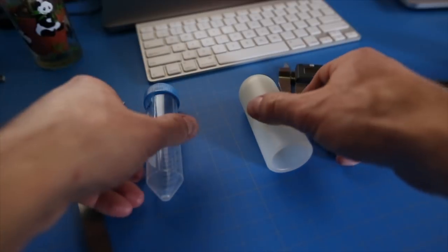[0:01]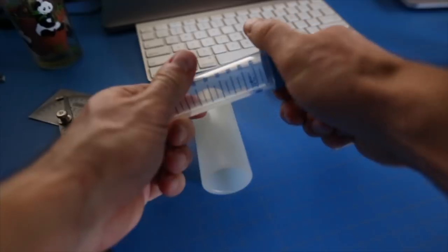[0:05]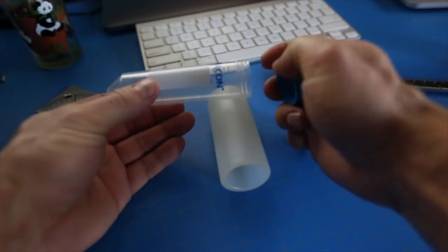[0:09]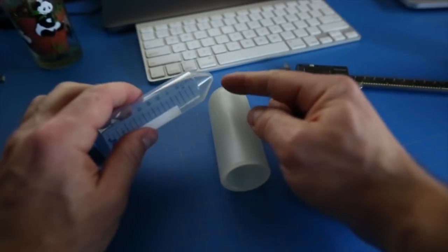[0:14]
Hey everyone, this project is quite a bit different than my normal projects, but incorporates 3D printing, which I'd like to do more of. Ultimately, the problem is that spacesuits are needed to protect astronauts from the intense radiation in space, and currently weigh too much to be useful for in-person Martian exploration.
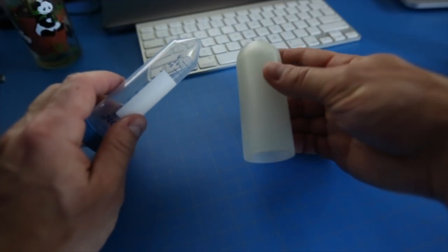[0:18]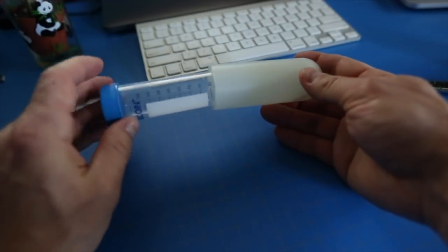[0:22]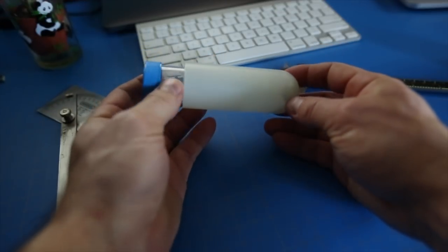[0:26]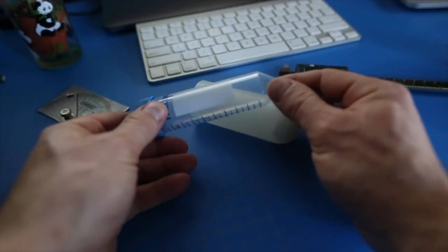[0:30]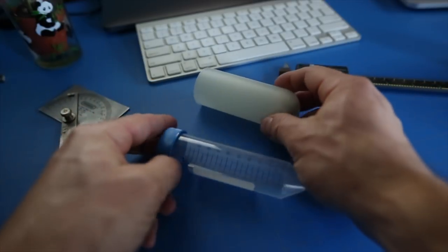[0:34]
I have a buddy that is working on a project to try to develop some new polymers that can do just as good of a job protecting, but at a much lighter weight. The issue he is having is that he needs to spin material held in these test tubes in a centrifuge, but the bottom of the test tube has a conical shape, whereas the centrifuge adapter has a spherical shape.
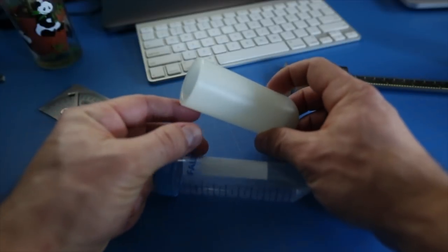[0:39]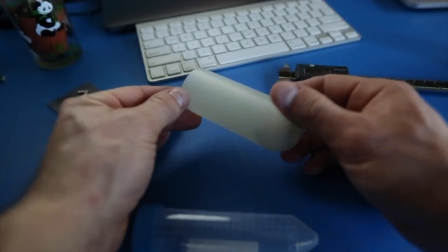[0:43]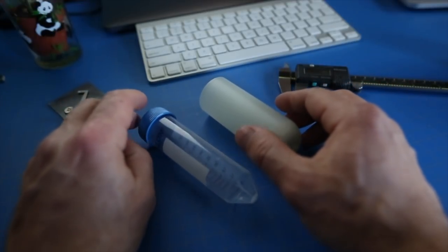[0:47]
The material is heavy enough and being spun fast enough that the test tube gets forced to take the shape of the bottom of the adapter and eventually breaks, making a mess and not doing anything to get us closer to Mars. Unfortunately, these adapters are expensive enough that the correct ones would use too much of the budget.
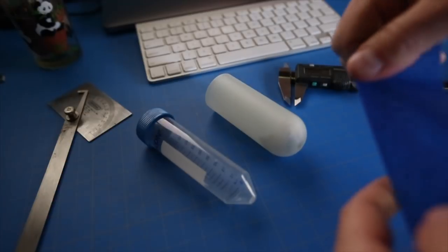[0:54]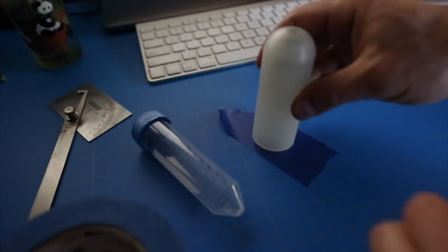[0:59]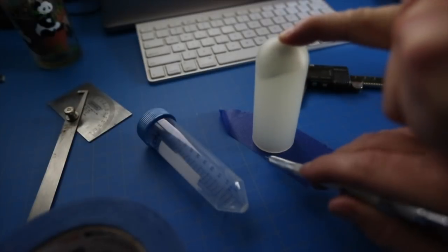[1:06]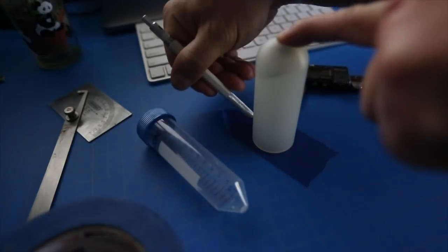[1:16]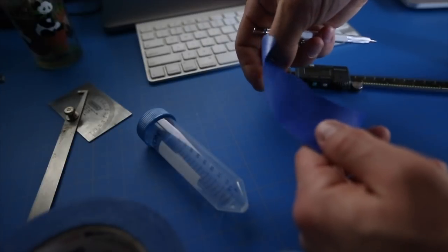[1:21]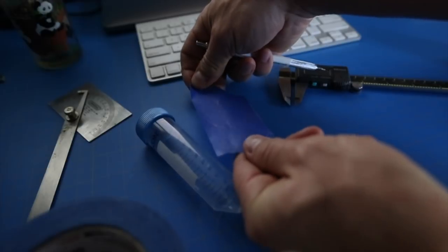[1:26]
Thankfully, for the sake of humanity's eventual salvation, I have a 3D printer and offered to make new adapters. Since he needs the original adapter back pretty quickly, I'm making a reference circle on a piece of masking tape just to make sure the printed parts are close enough to the right size. Now, I just need to model the new adapters.
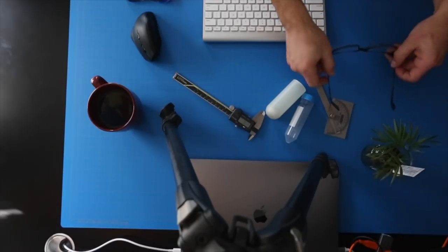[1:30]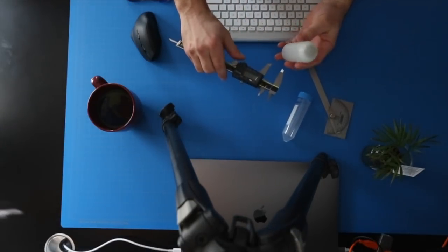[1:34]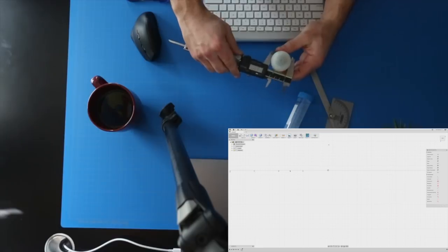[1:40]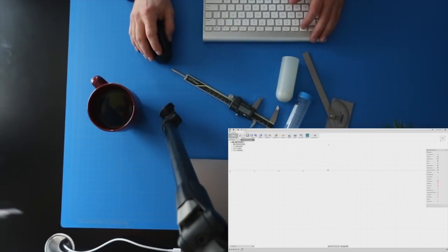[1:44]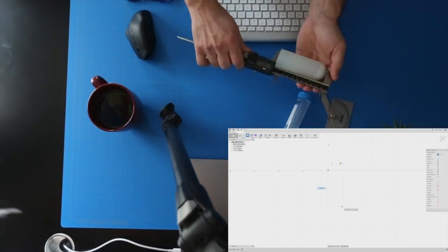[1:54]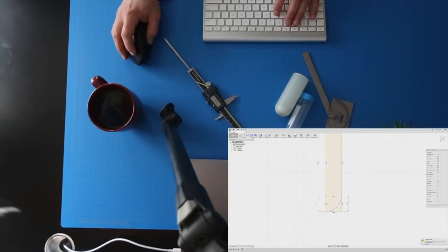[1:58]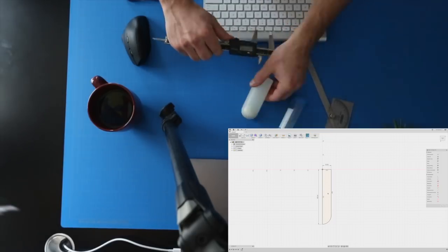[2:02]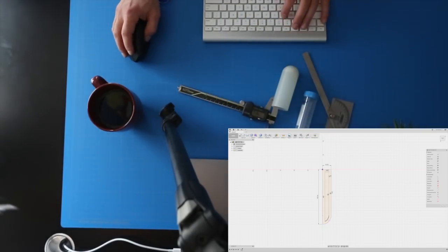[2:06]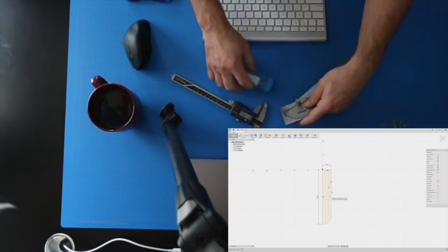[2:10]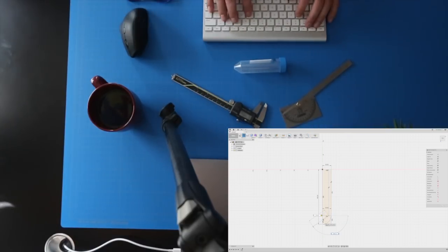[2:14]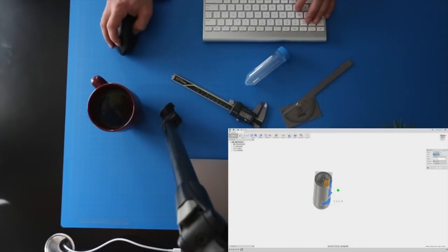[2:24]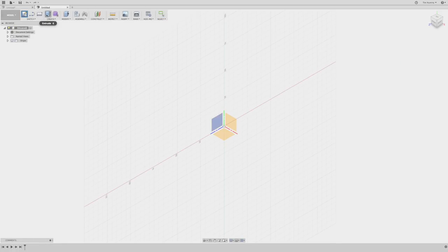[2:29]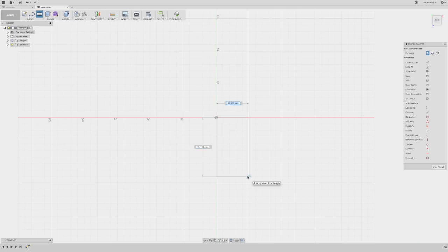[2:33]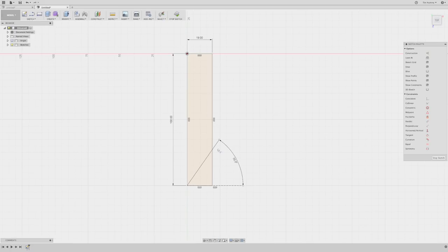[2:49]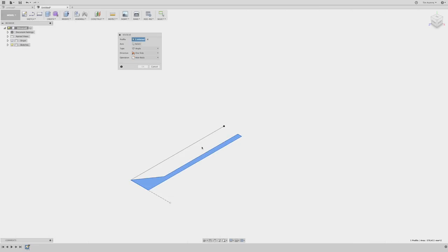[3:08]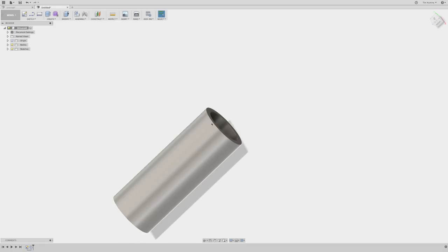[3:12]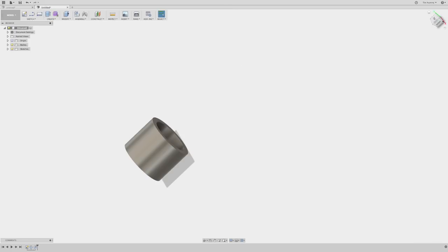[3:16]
Modeling a round base on the outside of the adapter proved to make the printing more difficult, so I confirmed that it can be flat on the bottom and remodeled it. I also realized I didn't math well and the original diameters were too small. For testing purposes, I shortened the overall length to reduce the wasted material, but still allow me to check tolerances.
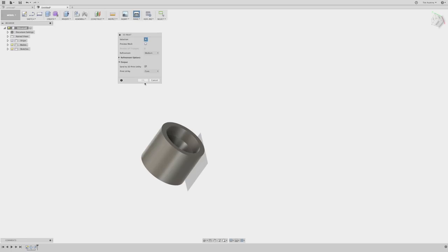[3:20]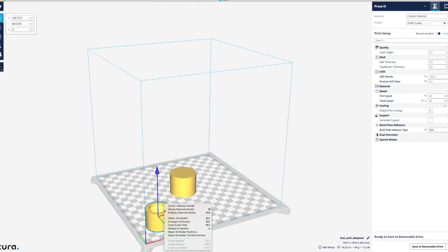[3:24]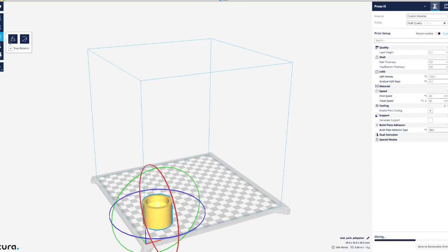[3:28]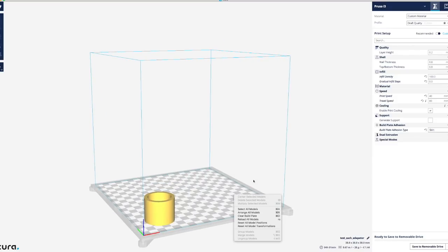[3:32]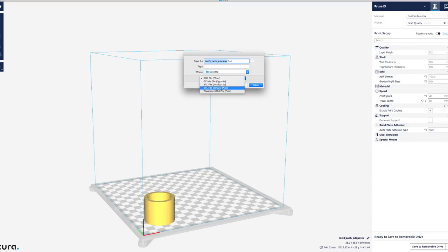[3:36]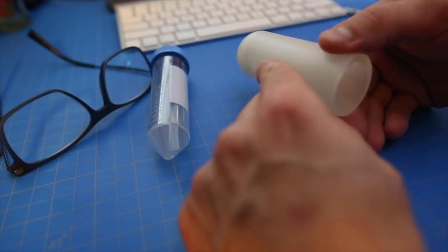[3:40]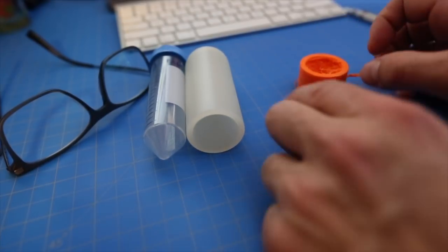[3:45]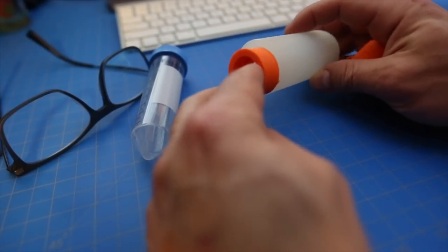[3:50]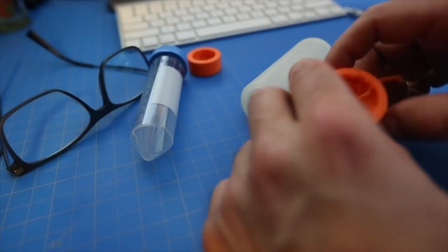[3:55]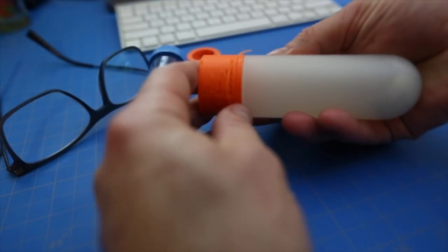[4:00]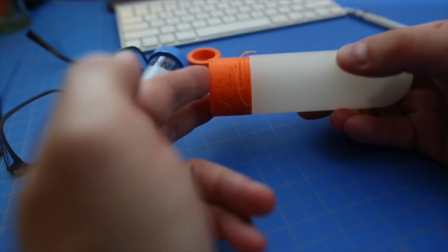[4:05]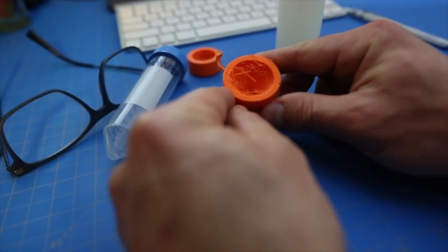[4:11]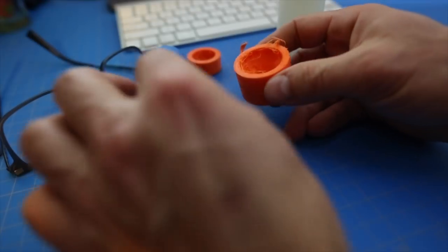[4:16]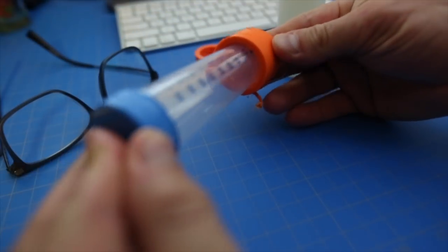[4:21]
Here's the first test print that was obviously way too small. The preceding print was the proper diameter, but had a host of other issues, including excessive stringing and poor layer adhesion. But aside from that, the bottom of the test tube fits well and seems to make a lot of contact with the adapter.
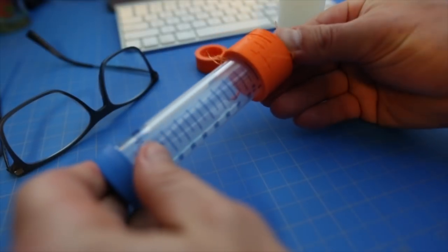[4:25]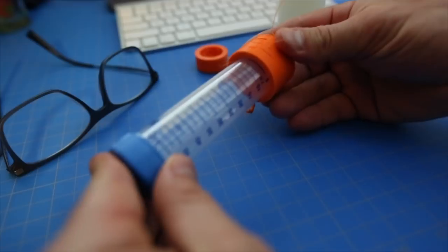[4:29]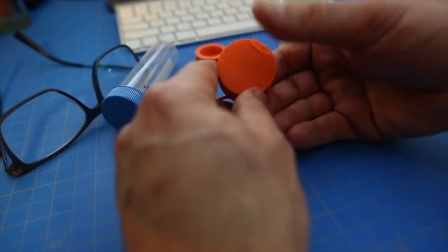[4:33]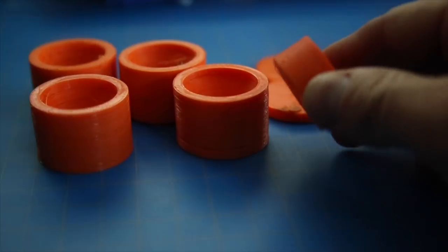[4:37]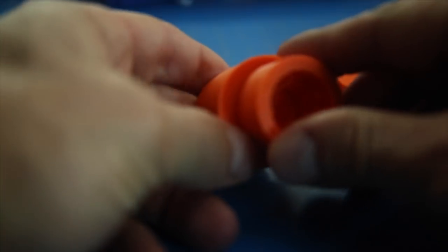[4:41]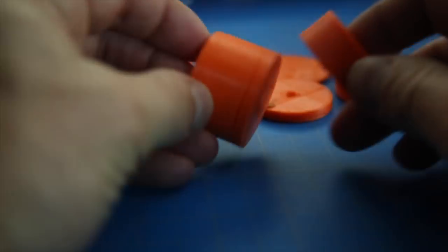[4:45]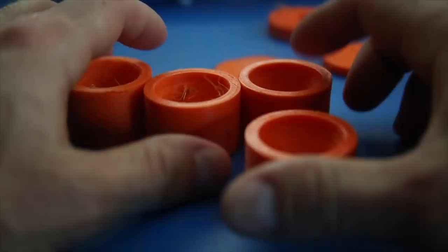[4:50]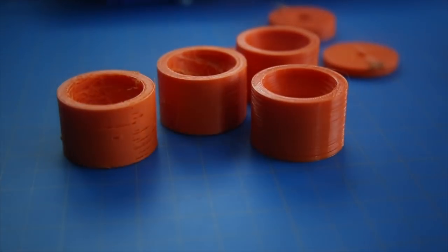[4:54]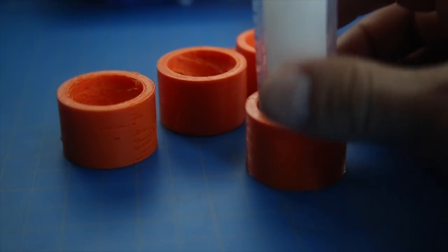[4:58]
Quite a few test prints later and some early stops, I was continuing to maintain the proper size, but still kept having issues getting a high quality print. Even though each iteration was slightly better than the previous, none of these ended up as nice as I wanted. These bad prints aren't a total waste though. Despite their ugly appearance, they will be handy for test tube stands on the desk.
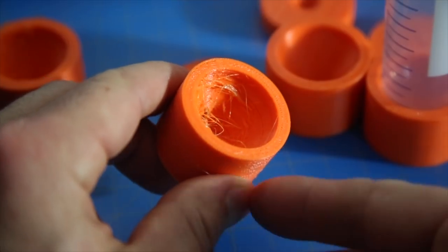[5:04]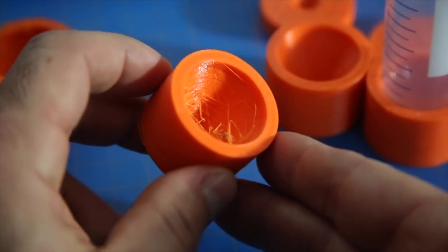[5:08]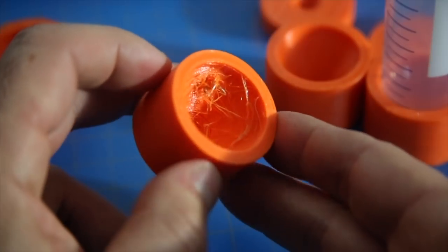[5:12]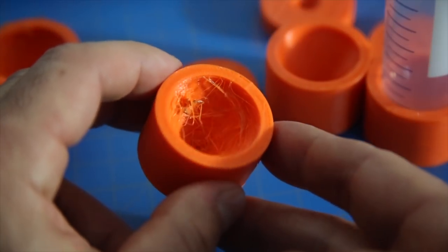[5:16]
The primary reason these weren't usable is because the stringing was causing a buildup on the nozzle and would eventually mess up the print before it finished. After quite a bit of tinkering, I finally got the printer settings dialed in. It's slow, but it works really well.
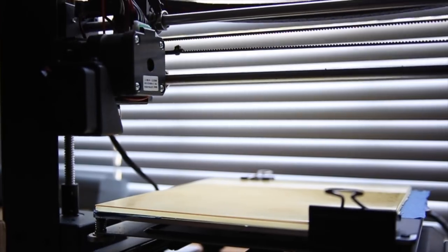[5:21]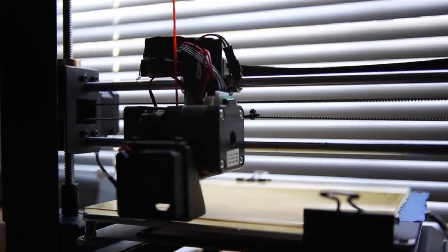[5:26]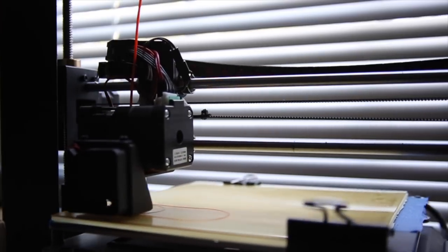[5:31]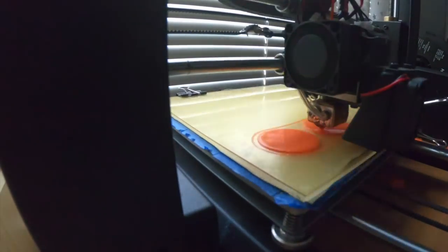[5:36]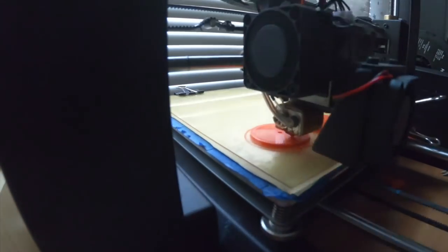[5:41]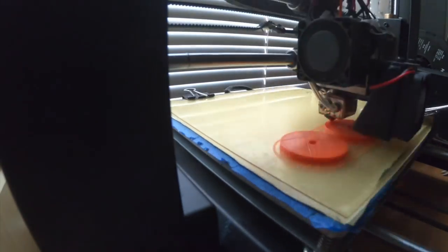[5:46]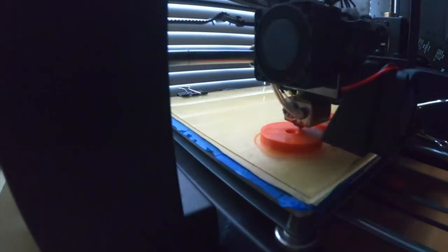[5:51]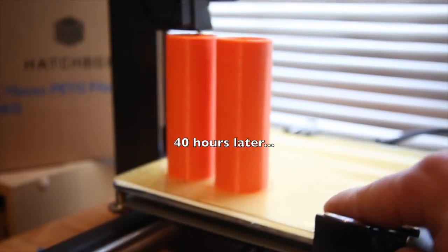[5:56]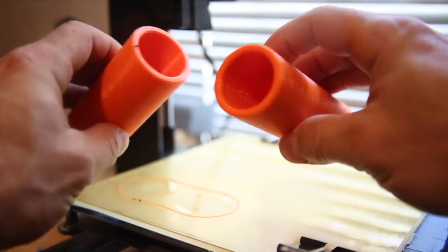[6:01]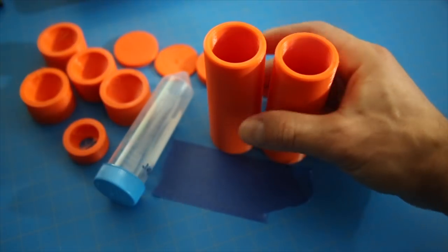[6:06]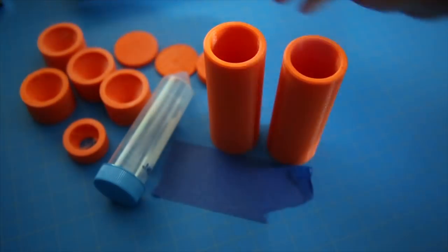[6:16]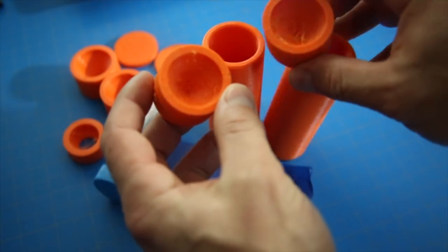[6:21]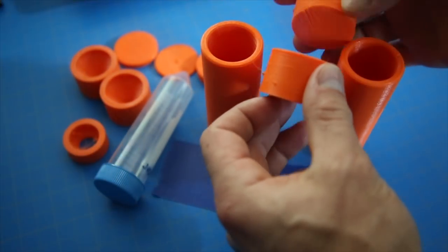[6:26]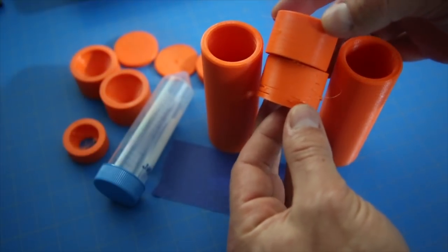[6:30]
I had plenty of time for the anticipation to build, but they had finally finished. As you can see, the finished adapters printed incredibly nicely with virtually zero stringing and what looks like exceptional layer adhesion. Although the layers are still visible and there is a slight texture to the surface, it is still 3D printing and very difficult to get a slick surface without some kind of chemical or heat processing after the print is finished. Also, especially when compared side by side to the original test prints, the final prints came out very well and look great.
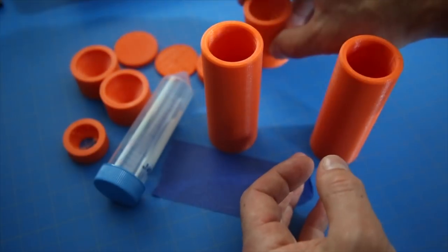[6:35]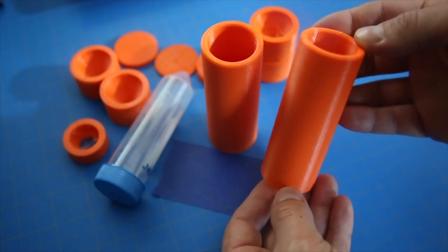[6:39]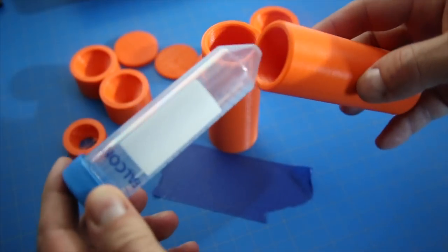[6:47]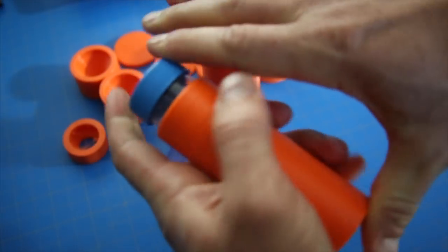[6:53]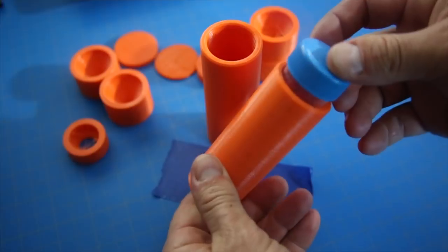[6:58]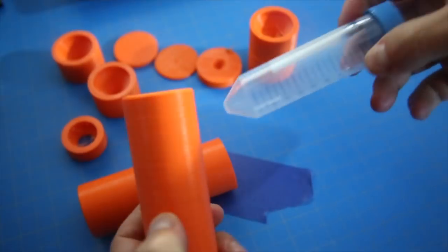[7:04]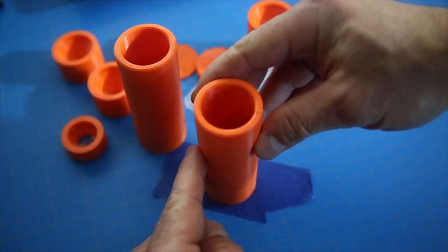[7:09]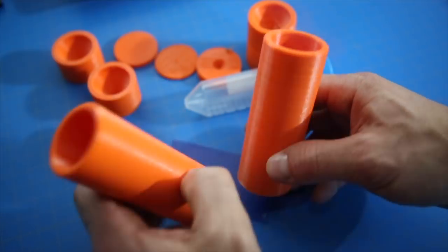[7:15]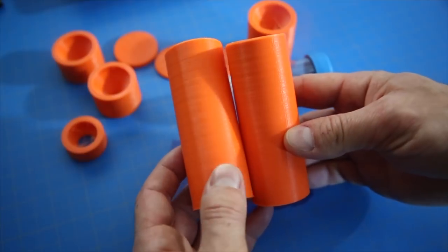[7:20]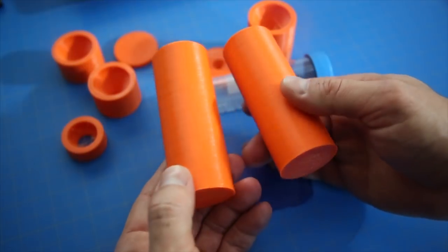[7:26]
Most importantly, the test tubes fit snugly and should have very little room for catastrophic deformation. Last but not least, they seem to also be of the proper diameter. It was a bit more work than I intended to get the printer working correctly with the new version of Cura, but in the end, I'm really happy with how these turned out, which should make doing more 3D printing projects in the future much easier. Hopefully this video is worth watching.